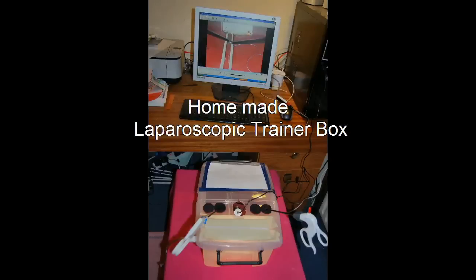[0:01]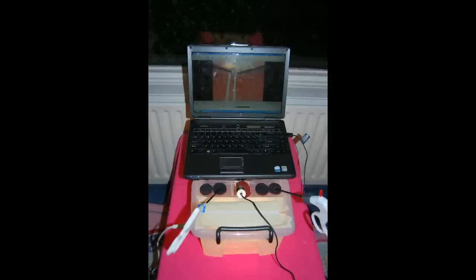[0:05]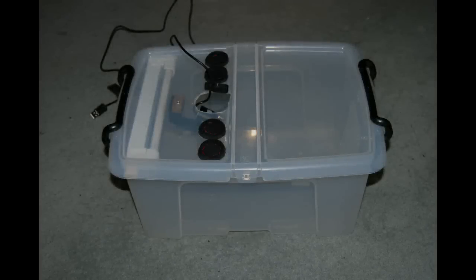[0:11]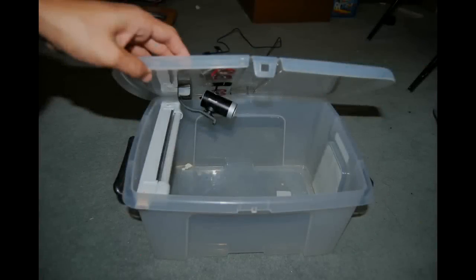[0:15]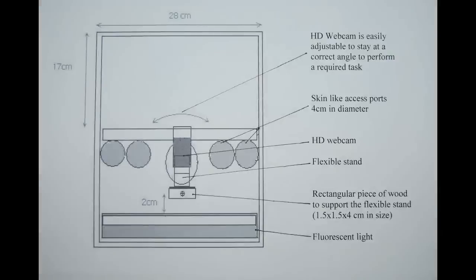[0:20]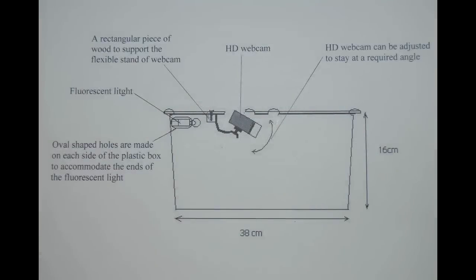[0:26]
Hi, this video presentation is about how to make an easily affordable homemade laparoscopic trainer box using a high definition web camera. Here is a completed trainer box. Diagram showing top view and side view.
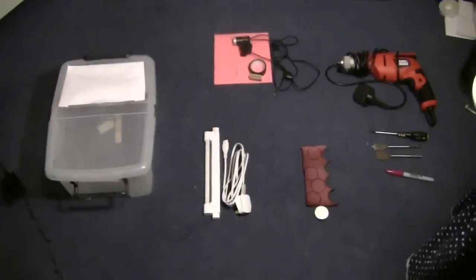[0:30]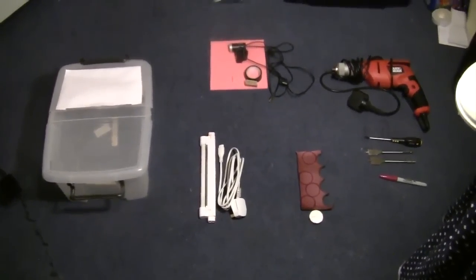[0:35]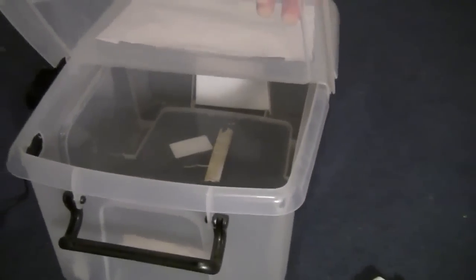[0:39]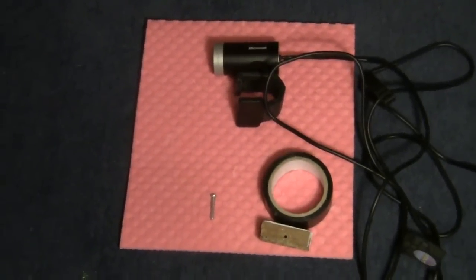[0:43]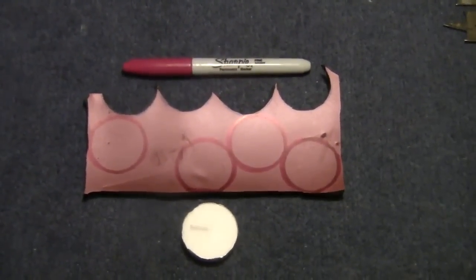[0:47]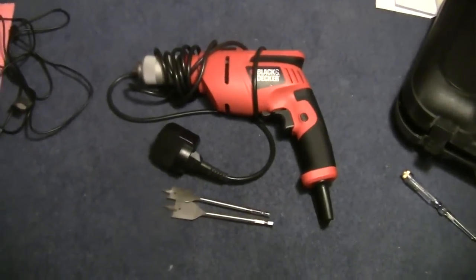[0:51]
Here are the required materials to make a trainer box: a 12 liter plastic storage box, a fluorescent light, a high definition web camera, a piece of neoprene, an electric drill machine with some drilling bits.
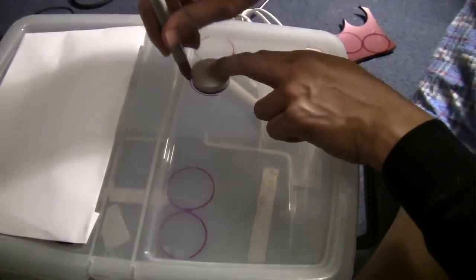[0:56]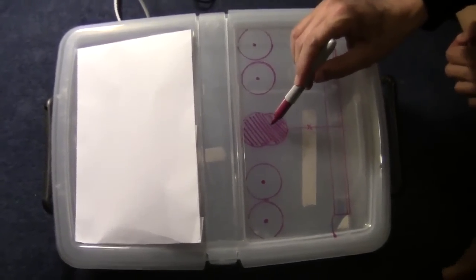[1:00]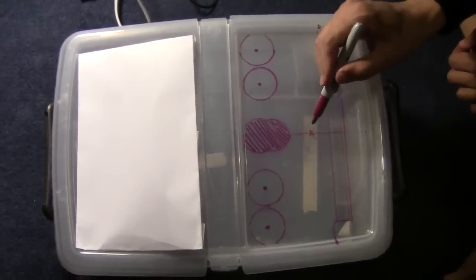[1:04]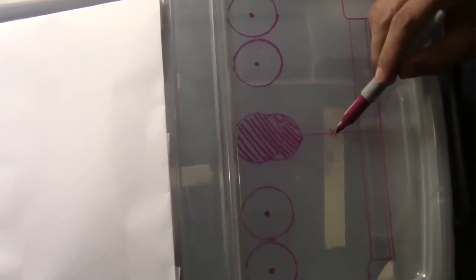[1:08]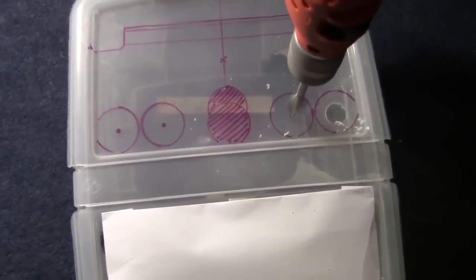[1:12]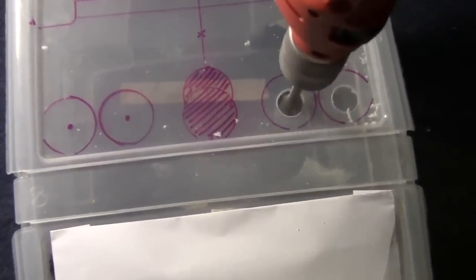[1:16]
Markings were made on the lid, 2 circles on each side of the midline. Two-centimeter circular holes were made, and these are for insertion of laparoscopic instruments.
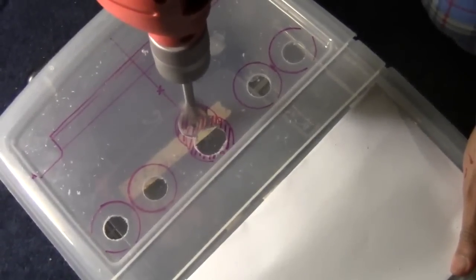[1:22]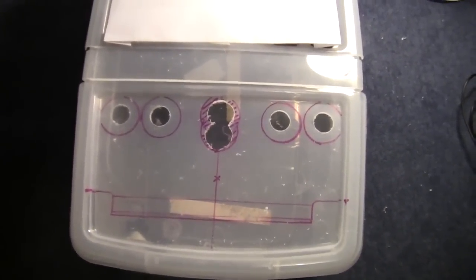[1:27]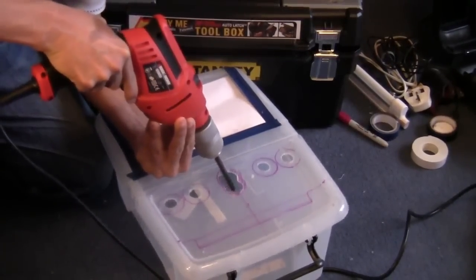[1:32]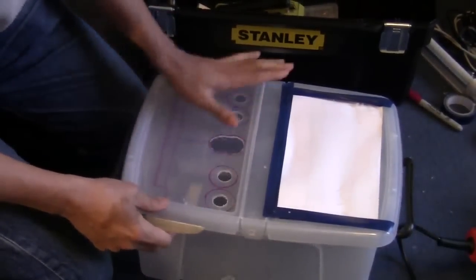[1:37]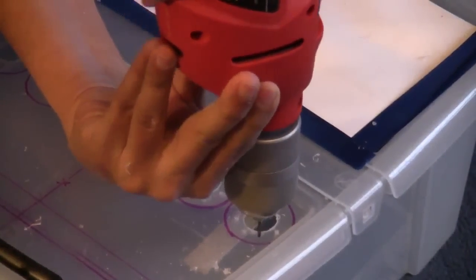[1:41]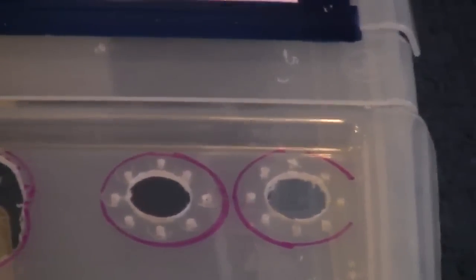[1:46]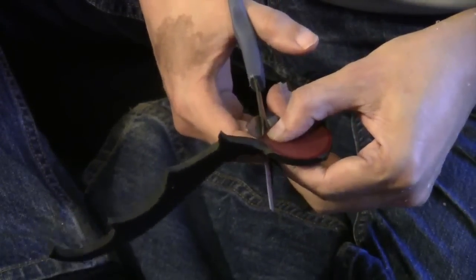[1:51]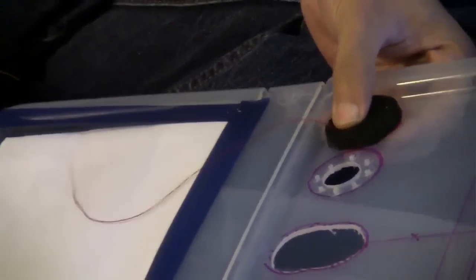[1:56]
A bigger hole is made in the center to accommodate the high definition web camera so that the camera can be adjusted from outside. Small holes were made around a circular hole. A circular piece of neoprene is trimmed and is stitched over the 2 cm circular hole.
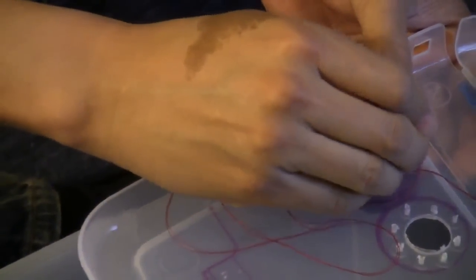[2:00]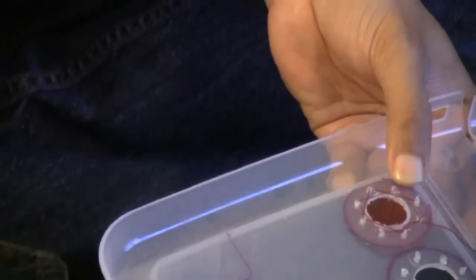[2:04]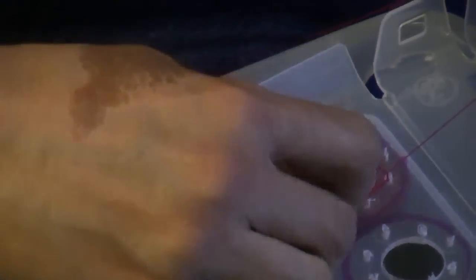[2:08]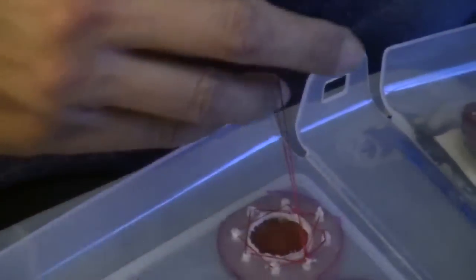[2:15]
A disc of neoprene measured 4 cm in diameter. This is to create a skin-like access port. The location of the access port can vary according to individual preference.
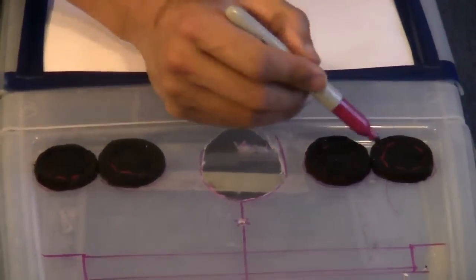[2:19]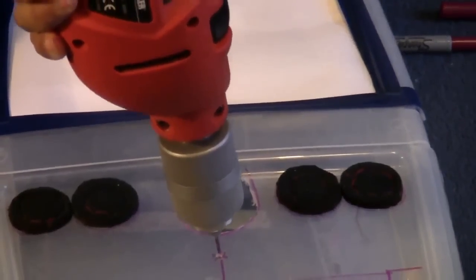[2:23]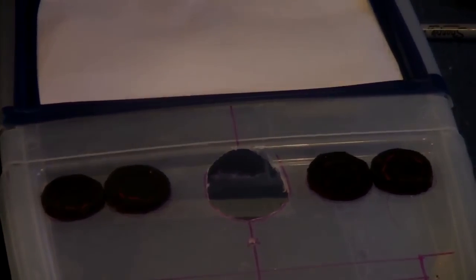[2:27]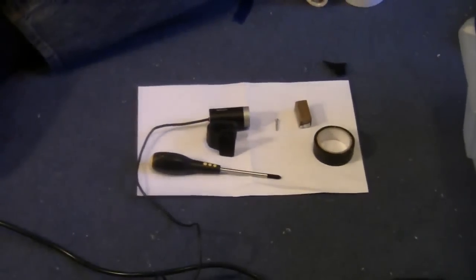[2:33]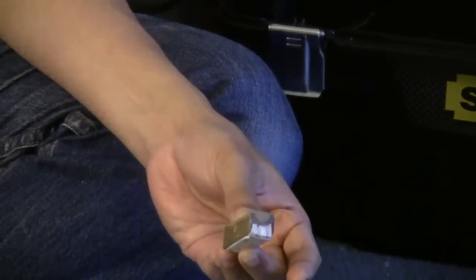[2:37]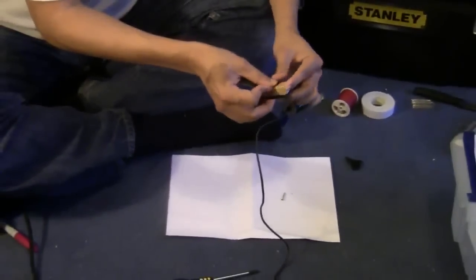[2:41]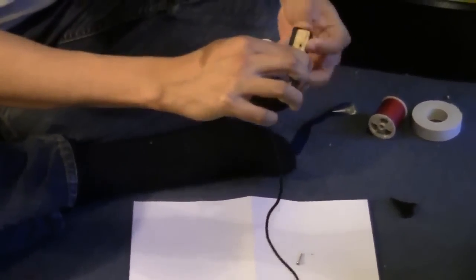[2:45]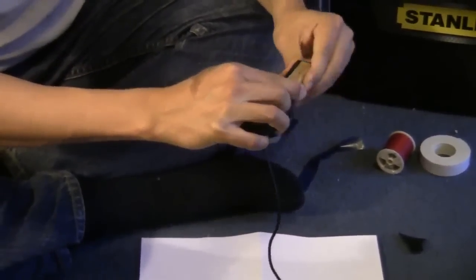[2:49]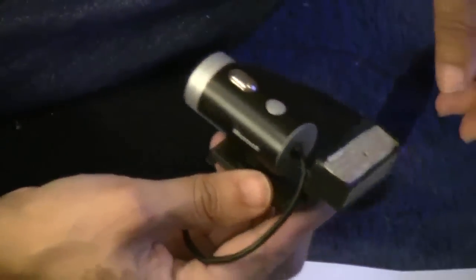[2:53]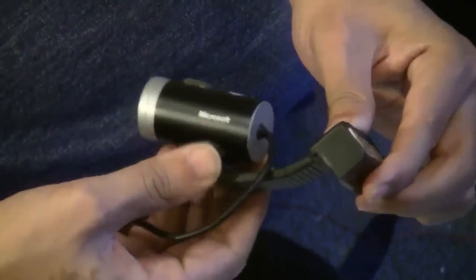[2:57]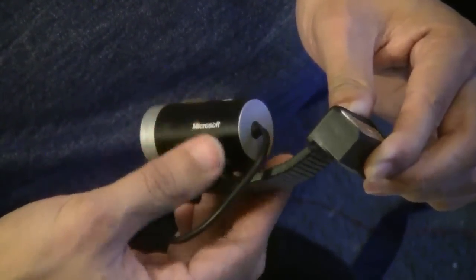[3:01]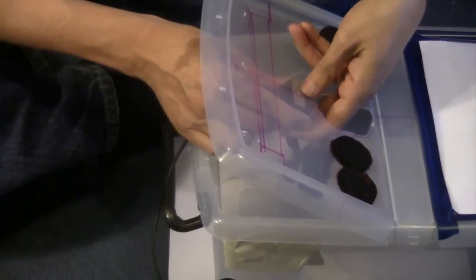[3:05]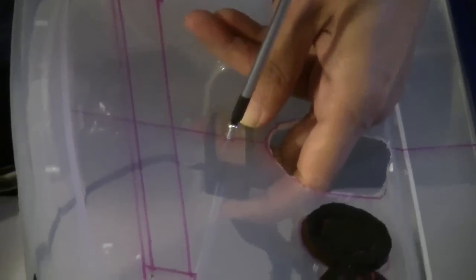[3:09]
A small hole is made in the midline for the high definition web camera. A small piece of wood, with a small hole made in the center, is attached to the flexible stand of the web camera with wire tape. The high definition web camera is attached to the inner surface of the lid with a small screw.
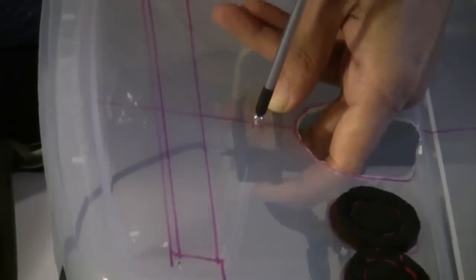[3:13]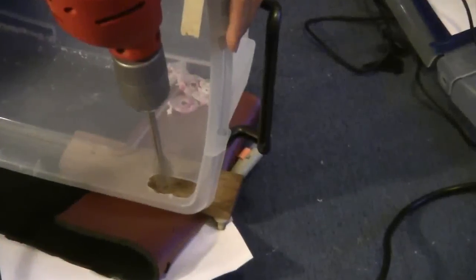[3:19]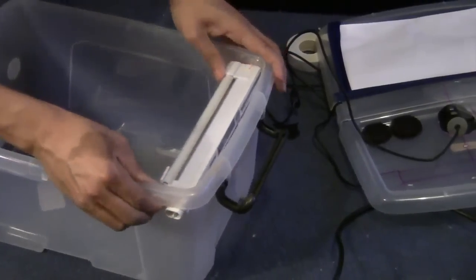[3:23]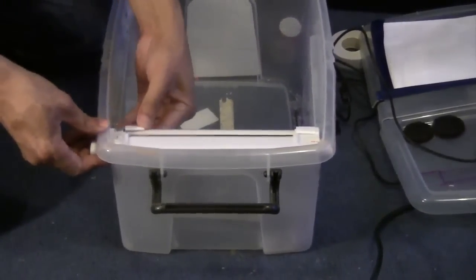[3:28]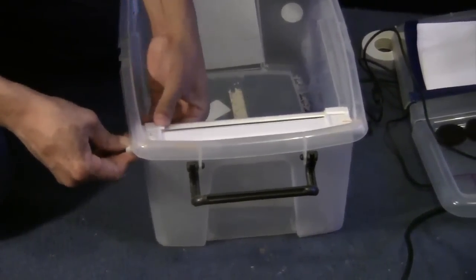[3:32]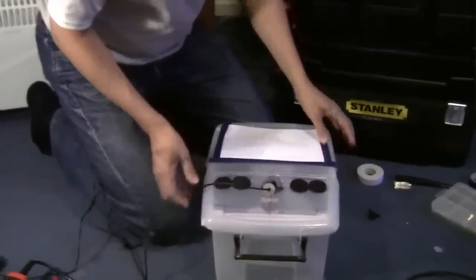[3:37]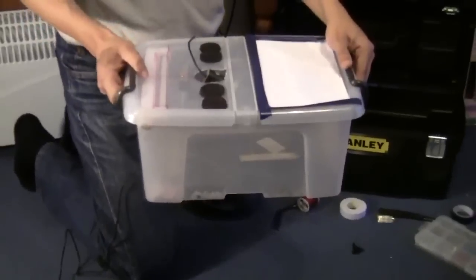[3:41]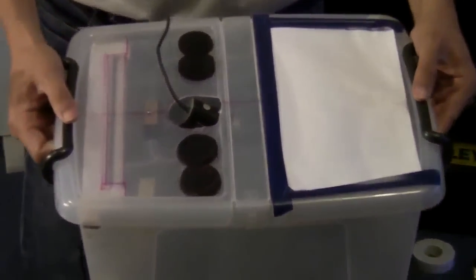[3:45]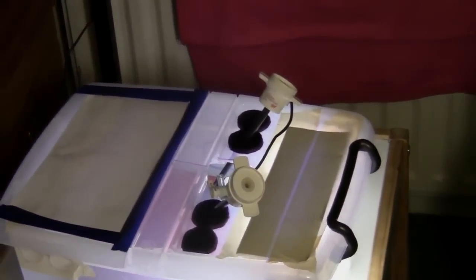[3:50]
Holes were made on each side of the plastic box to accommodate a fluorescent light. Here is a completed trainer box. Laparoscopic instruments can be inserted with or without using laparoscopic ports.
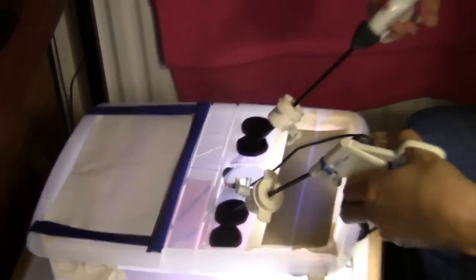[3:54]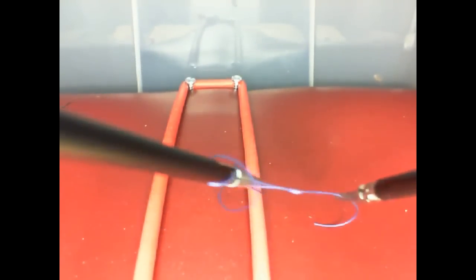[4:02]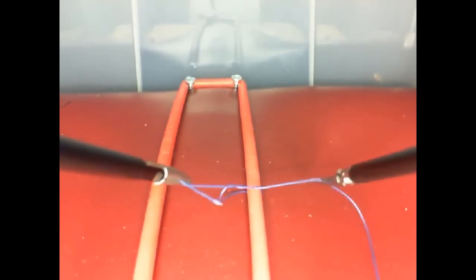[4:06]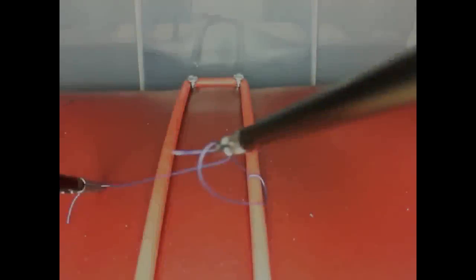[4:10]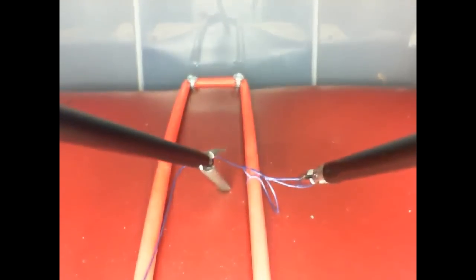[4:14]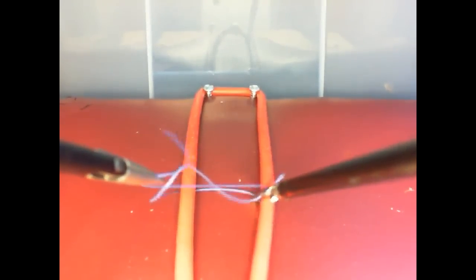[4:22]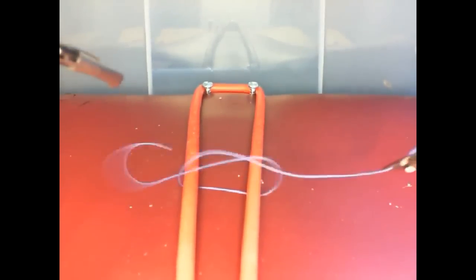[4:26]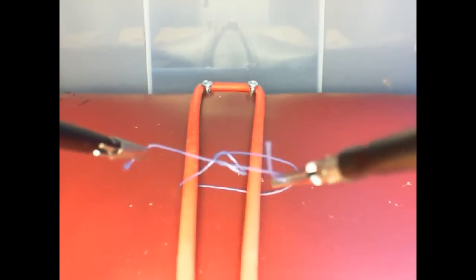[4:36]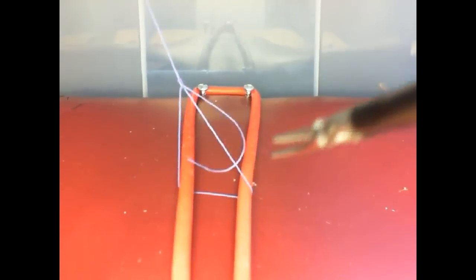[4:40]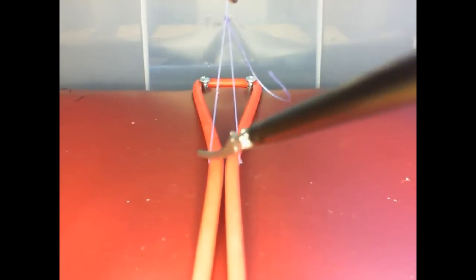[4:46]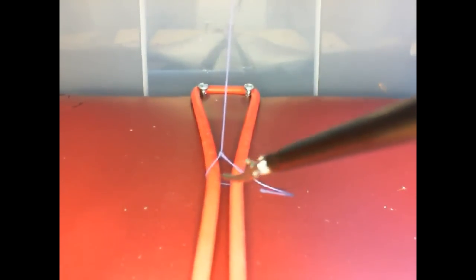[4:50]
Here are some video clips showing intracorporeal knot tying practice. Surgeon's knot. Double square knot. Performance can be recorded and replayed so the individual can learn from errors.